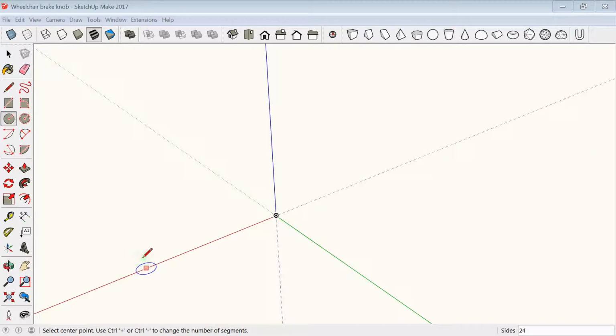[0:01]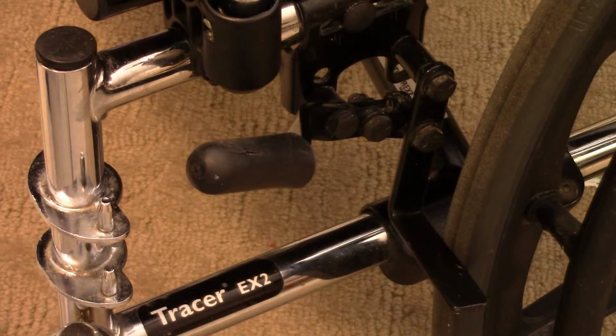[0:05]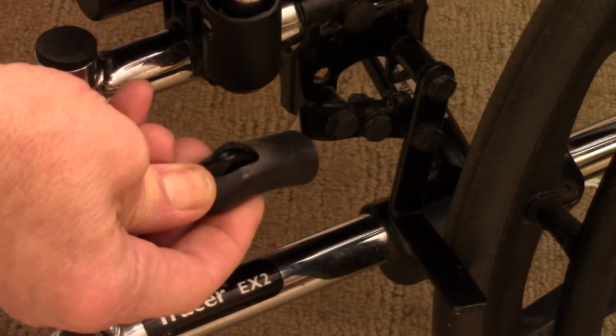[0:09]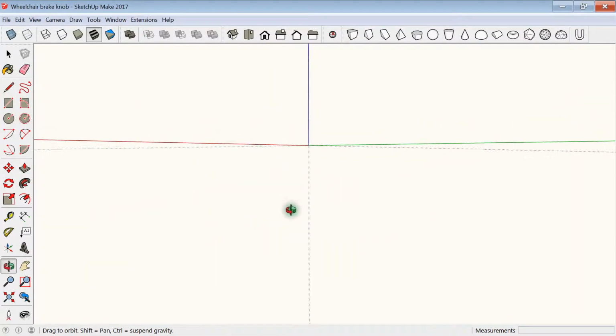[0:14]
In this video I'm going to make a replacement wheelchair brake handle. You can see where the old handle is broken and kind of pushed right through, so I'm going to take that off. I'm going to start by drawing the profile.
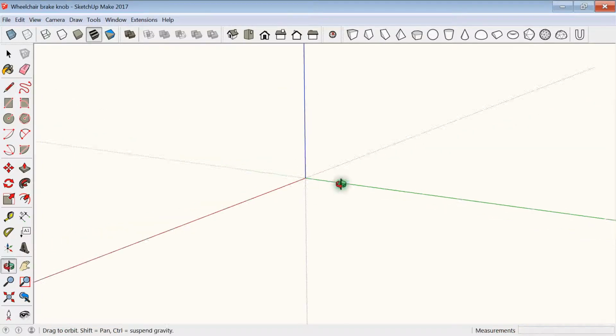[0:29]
Very simply coming up. The original is about 60 millimeters or a little less, so I'm going to make it 60 millimeters. And then it's about 23 millimeters in diameter. I'm going to come out on the green axis by pressing the left arrow key, and I'm going to come out 11.5 millimeters, and then down to the green axis and then back, just to make a rectangle.
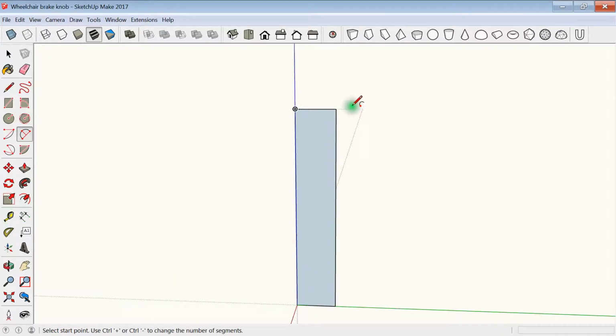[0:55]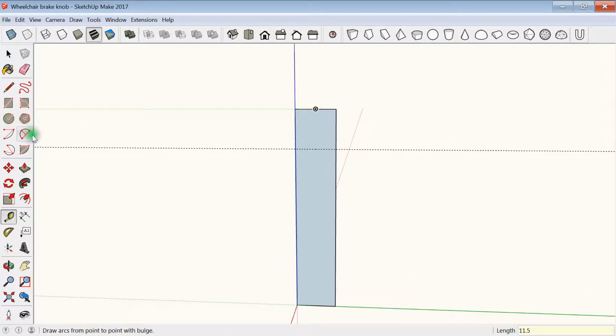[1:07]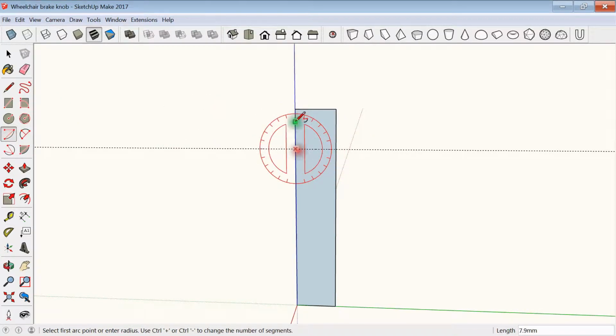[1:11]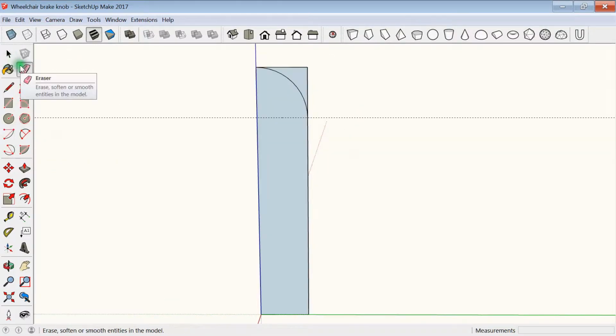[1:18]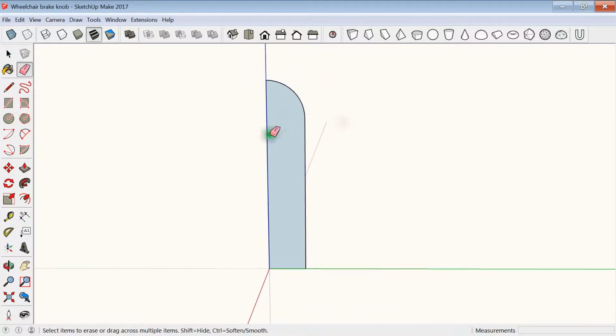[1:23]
Okay, I'm going to round off the top corner to make it a half round dome on top. So to do that I need a guideline, 11.5 millimeters down, and the arc tool, take the corner off, and then erase the outside edge. Next I'm going to select it all, and then lift it up a little bit.
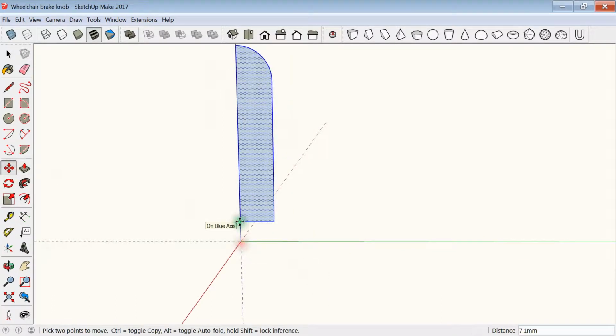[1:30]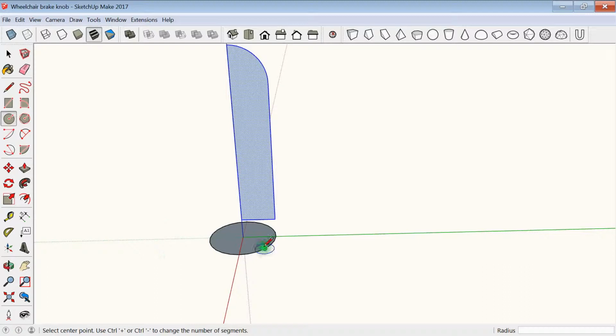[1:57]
Then I'm going to draw my circle underneath. I'm going to use the up arrow to make it snap to the blue axis, and then again, coming out 11.5 millimeters. And that'll be fine.
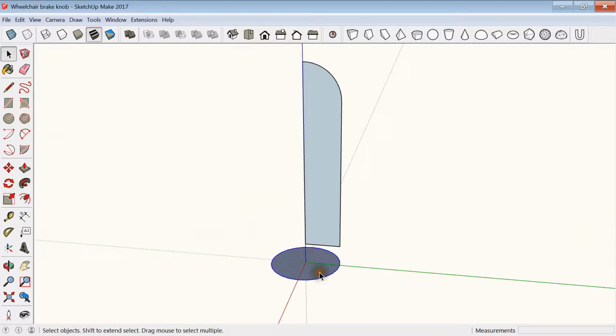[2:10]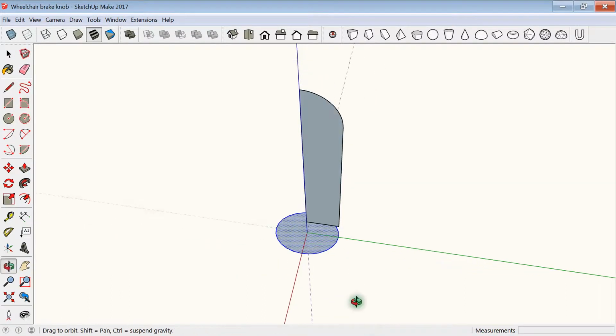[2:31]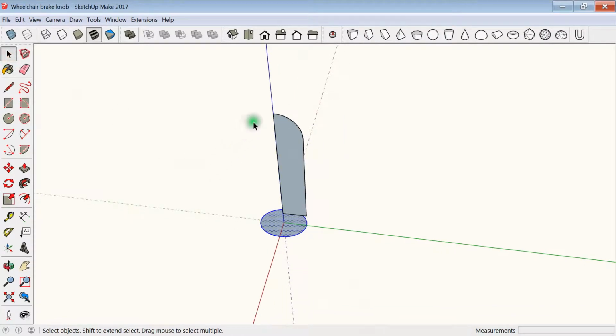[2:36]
Now, I'm going to make it slightly oval. I'm going to triple click on the circle to select it all, and then the scale tool, and then on the red axis I'm going to scale it down to make it a little bit of an oval. So holding the control key, I'm just going to push it in to about 80% or somewhere around there, just to make it a bit of an oval.
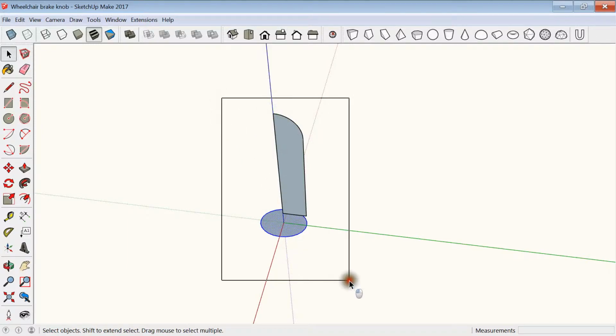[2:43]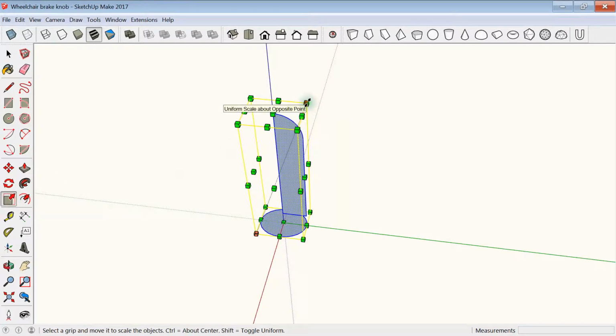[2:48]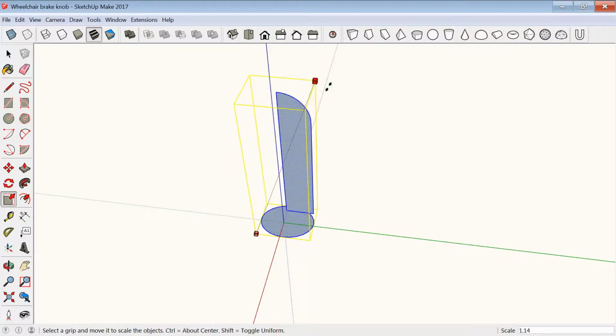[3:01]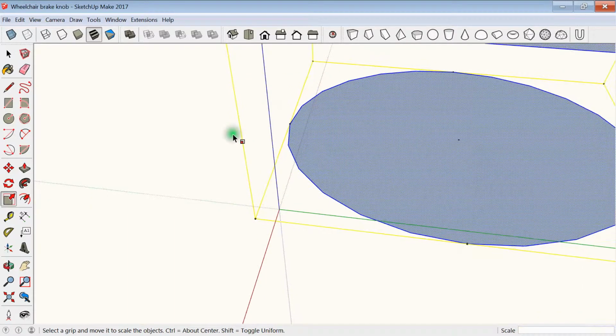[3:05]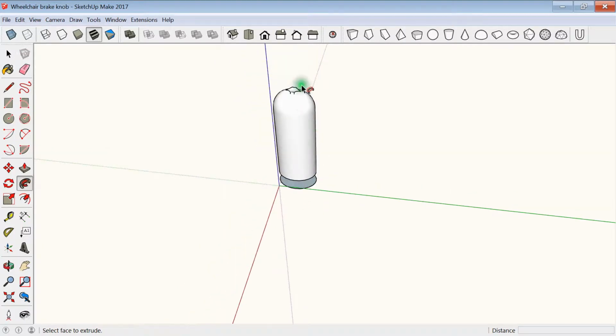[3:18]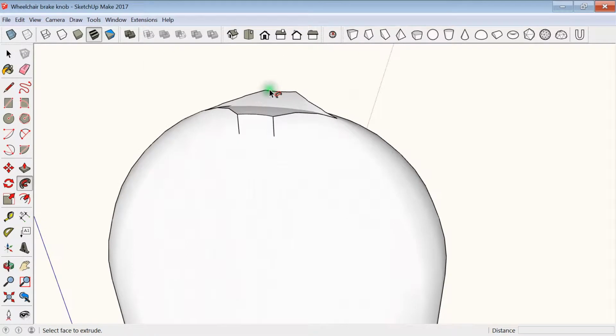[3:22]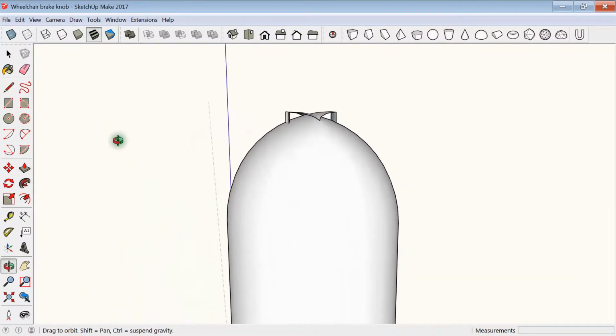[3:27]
Now, sometimes when it's this small, it has a hard time with the geometry of curves at the top. So I'm going to select the whole thing and scale it up 10 times for just a few minutes. Clicking on one of the corner pieces so that it's a uniform scale, I'm going to start drawing up and then put 10 and enter, just to make it huge. Now, clicking the outside of the base of the oval, and then the Follow Me tool, and then click on the face. It still has a little bit of an odd edge, but I think it's going to be okay.
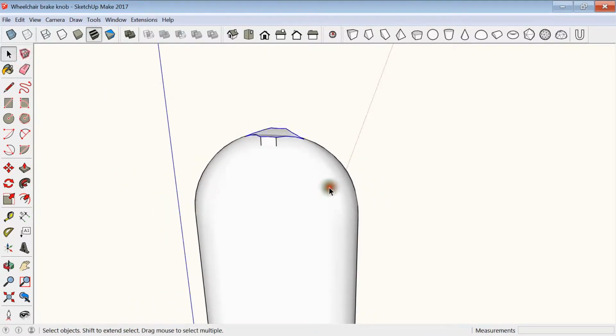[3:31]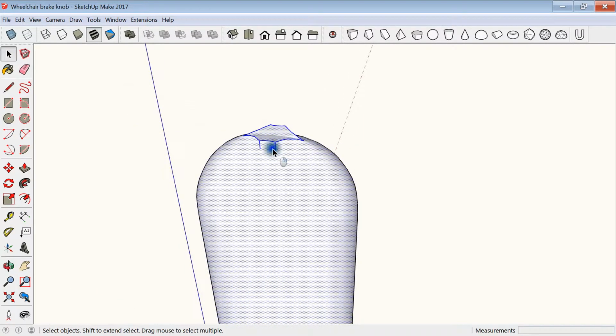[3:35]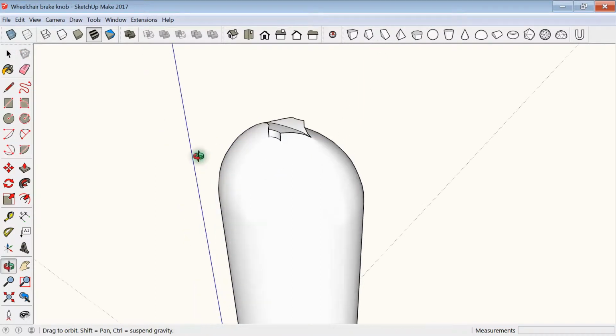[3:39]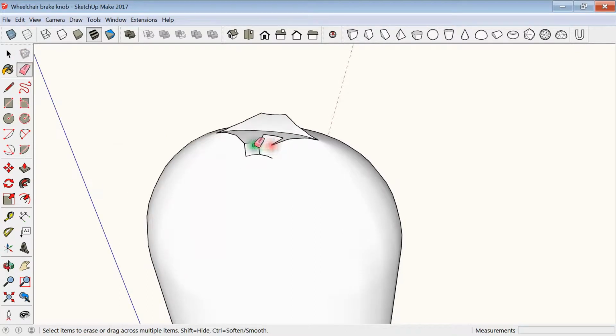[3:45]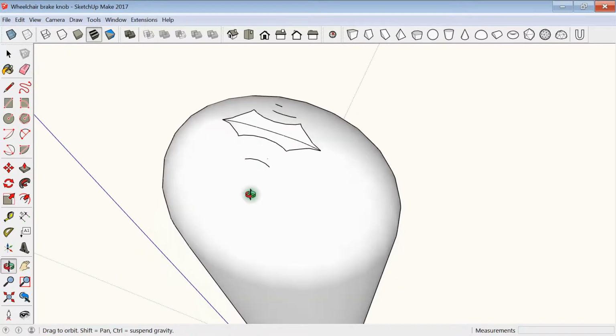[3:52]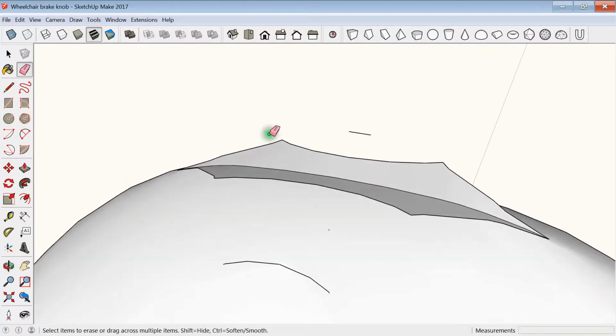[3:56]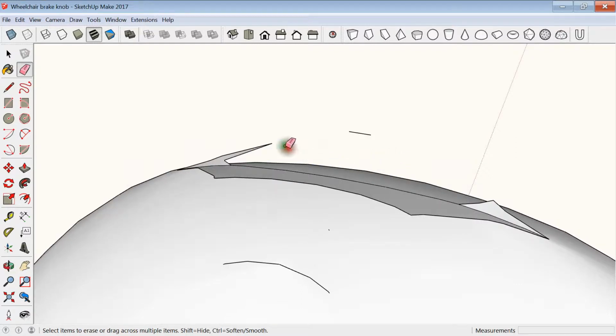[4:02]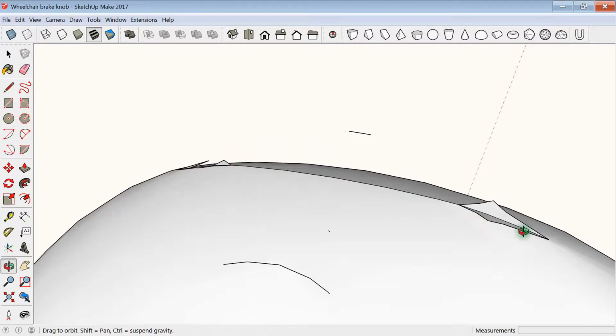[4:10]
So I'm going to select everything, then right click and intersect faces. That should allow those areas to be cleaned up. And I'm just erasing the extra pieces. There's probably a much better way to do this, but I don't do these enough to worry about it. So I'll just clean it up by hand real quick, just using the eraser tool and erasing the extra piece of geometry that I don't want.
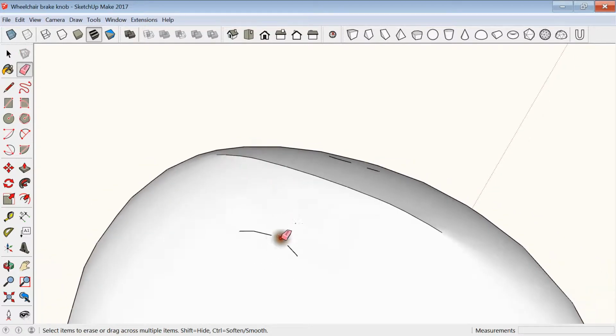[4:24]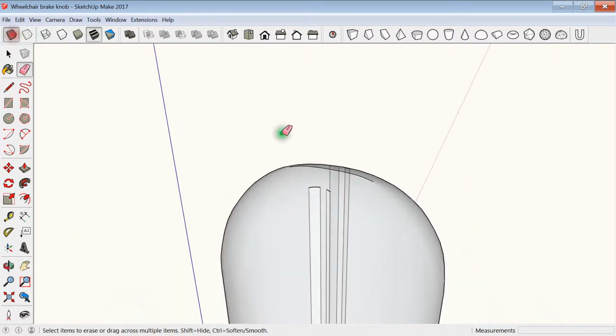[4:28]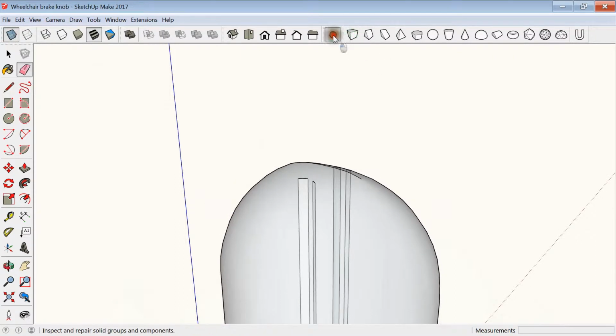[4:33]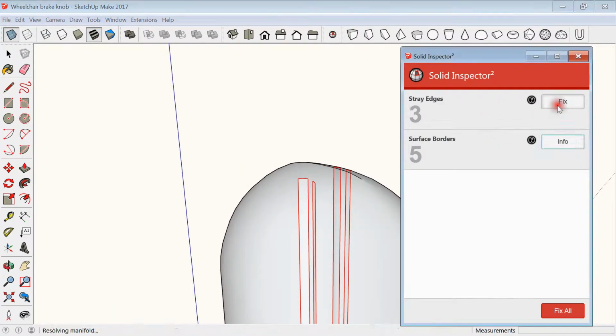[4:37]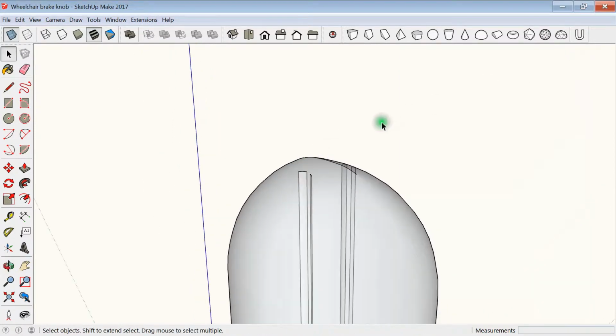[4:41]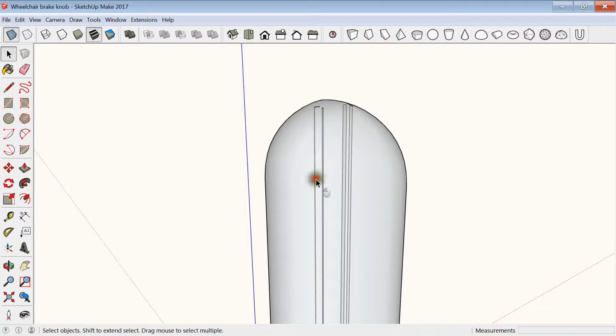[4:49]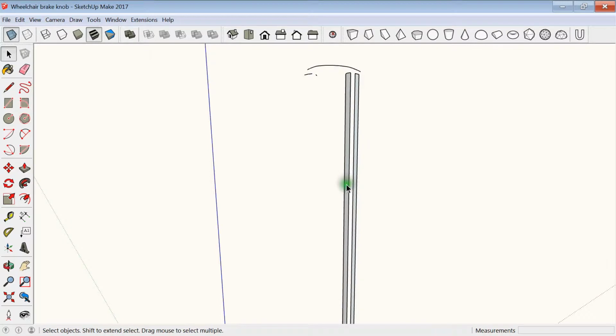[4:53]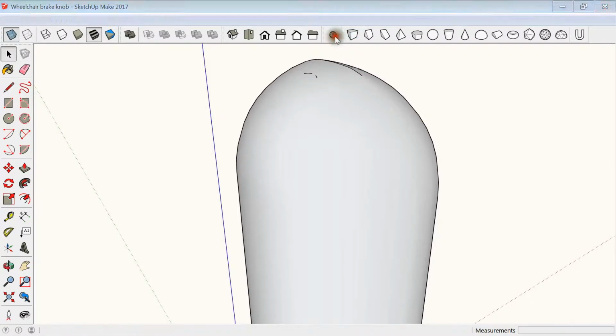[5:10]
Okay, let's look at it in X-ray mode. It's got a few extra pieces in there still. So let's see if we can select those from outside. Yes. So I'm just selecting them and then deleting. Whoops. Just being careful not to select the whole thing.
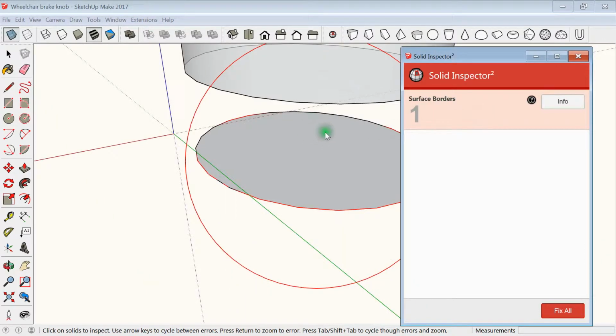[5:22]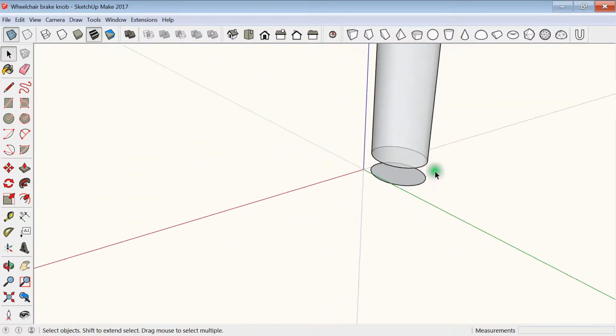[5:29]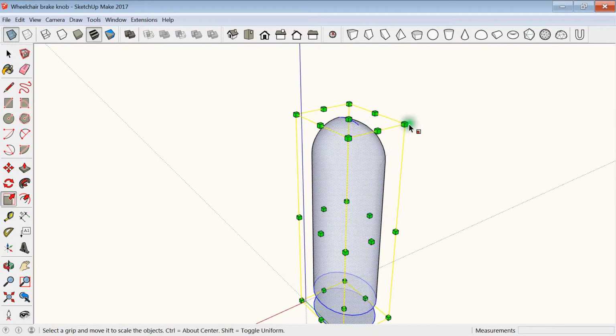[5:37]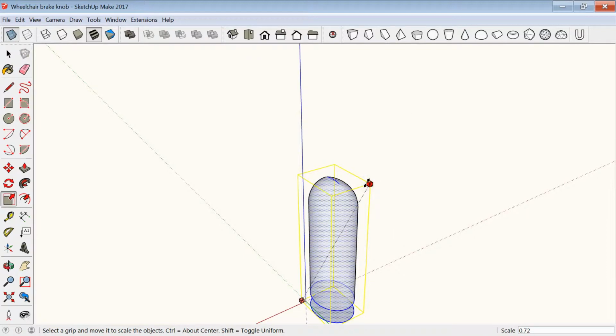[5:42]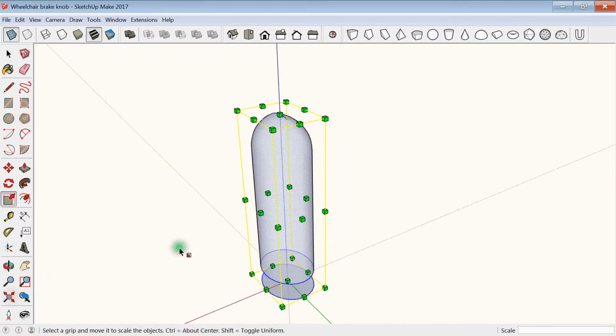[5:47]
Okay, and then the surface border, let's find out where that's at. I can find that out by clicking on it, and then the up arrow, and then enter. And of course it's the bottom, the base piece. Okay, that's fine for right now, because now I'm going to shrink it back down by going the opposite direction, start pushing in, and 0.1 and enter. And then zoom extents.
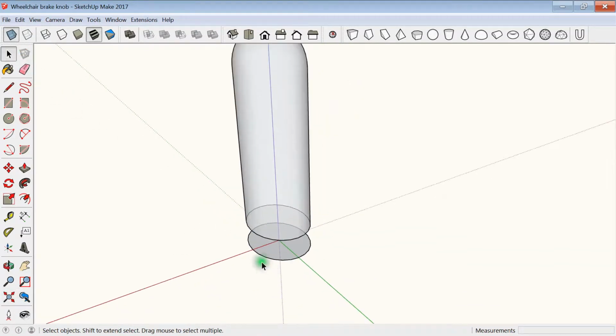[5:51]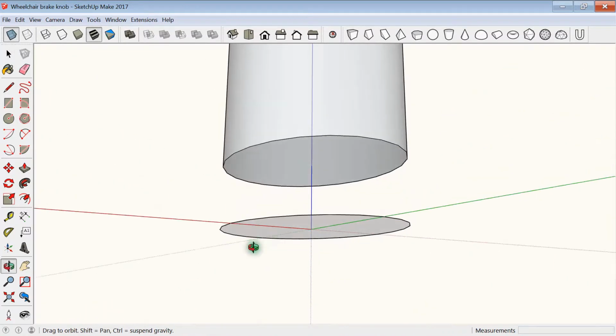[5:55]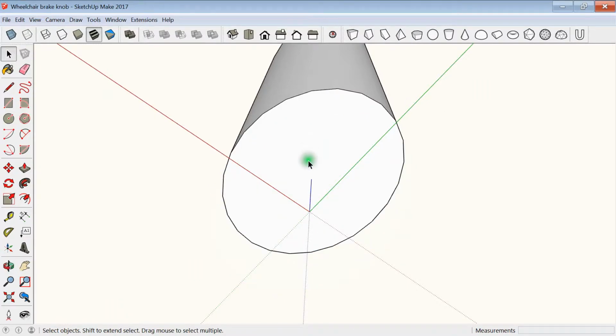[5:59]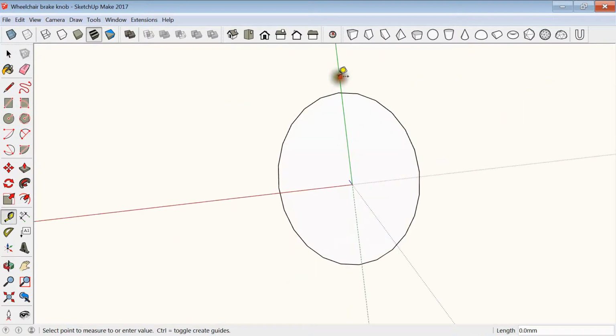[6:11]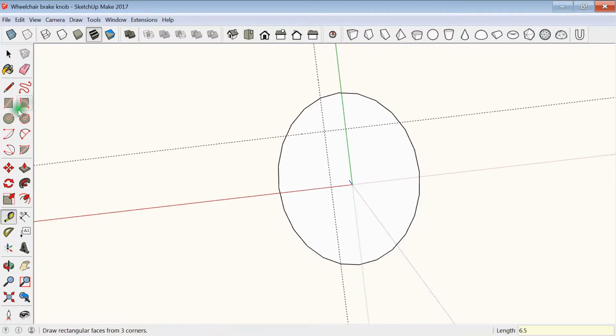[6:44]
Okay, now I need the rectangle hole, so we can get rid of this bottom piece now. I need to make the rectangle, it's 4.9 millimeters by 13 millimeters, 40 millimeters deep into it. Tape measure from the green line over. I'm going to go 2.4. Okay, let's try that correctly. Go over 2.4 and enter. And from the red axis, going to come up or down, it doesn't matter, half of the 13, so 6.5 millimeters, and enter.
Now with the rectangle tool, start at the intersection we just made and start pulling diagonally. Hit the up arrow key to lock to the blue plane. Start pulling across, and then I'll type in 4.8, comma, 13. And that'll give the rectangle.
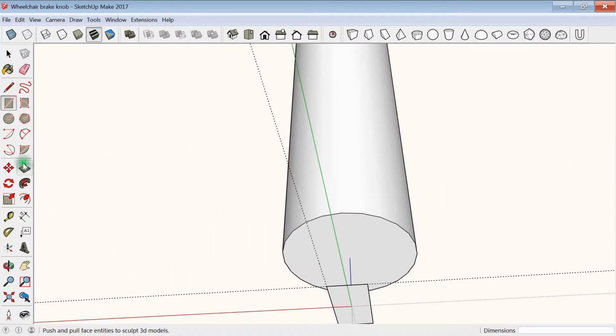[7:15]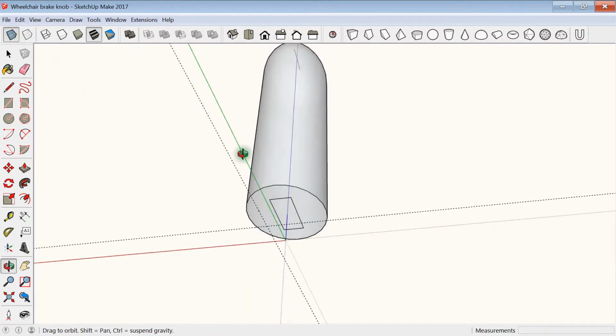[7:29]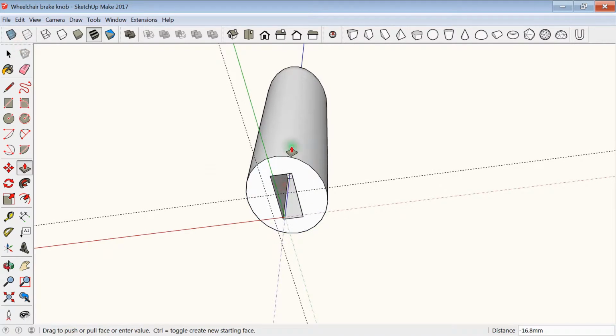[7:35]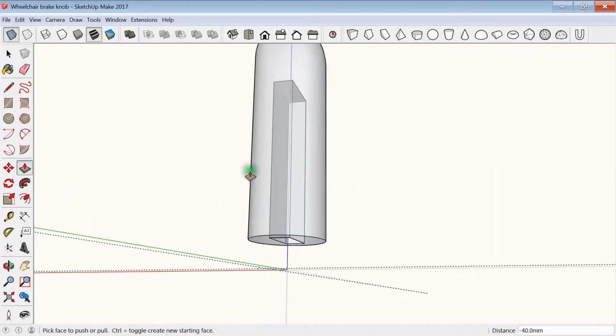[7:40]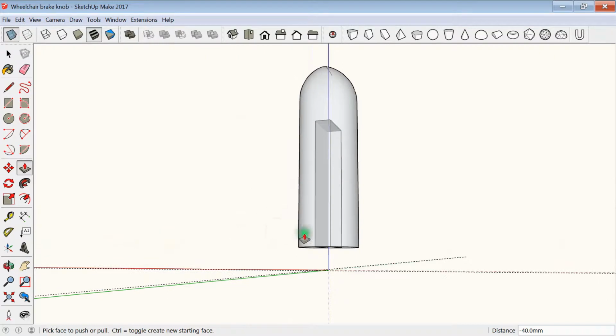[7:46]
Now with the push-pull tool, you can just pull it up until it hits the face. I'm going to do the same with the bottom of it. Now it should just have a rectangle at the bottom of it. Now the push-pull tool again, and then push it up 40 millimeters, enter. By printing this with a flex material with a low infill, that should give it some give and flex and should fit it nice and snug.
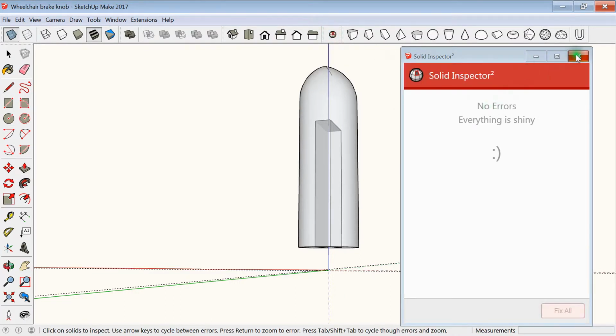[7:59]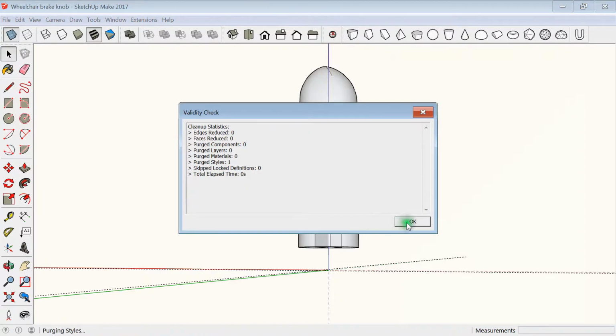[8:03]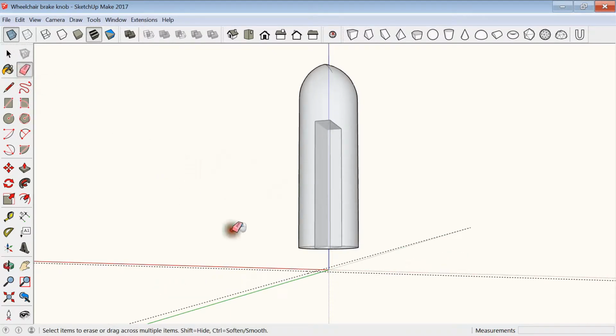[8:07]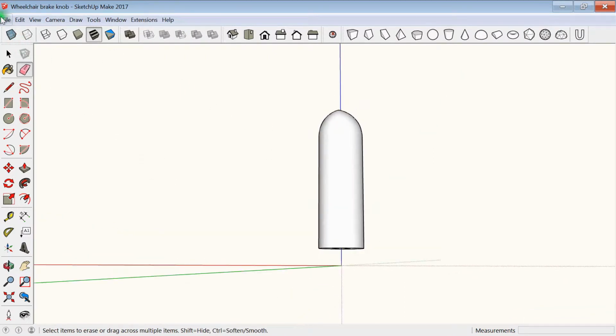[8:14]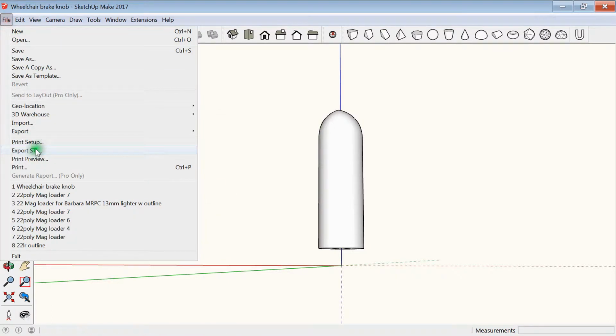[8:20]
So last I'm going to do the solid inspector and the cleanup tool, and everything looks good. Get rid of the extra lines, and finally save and export. So save, then export as an STL.
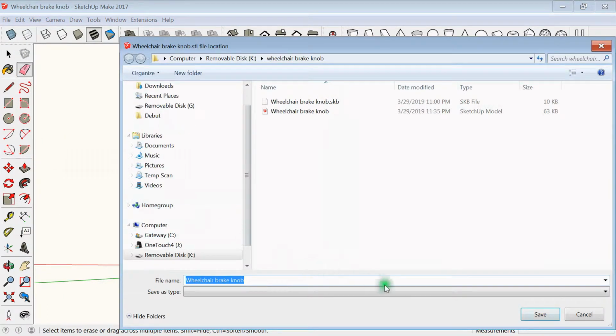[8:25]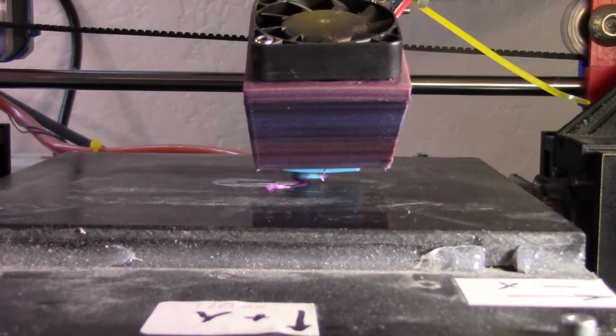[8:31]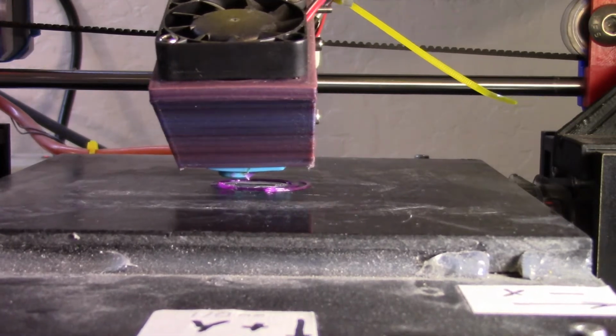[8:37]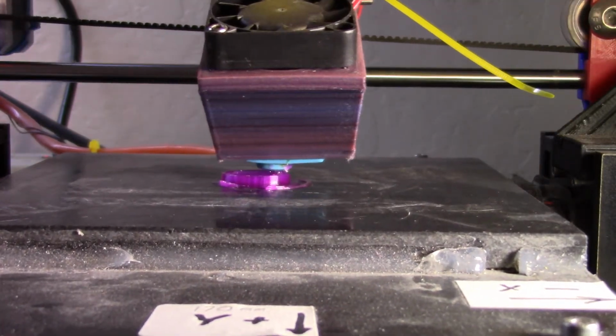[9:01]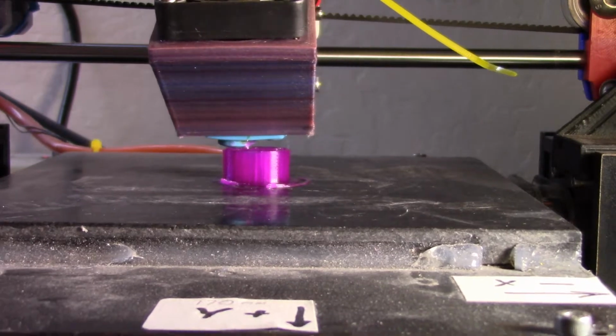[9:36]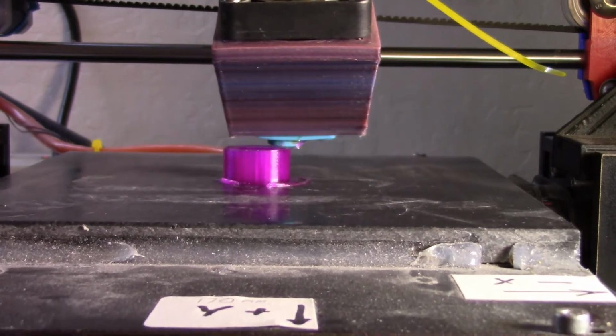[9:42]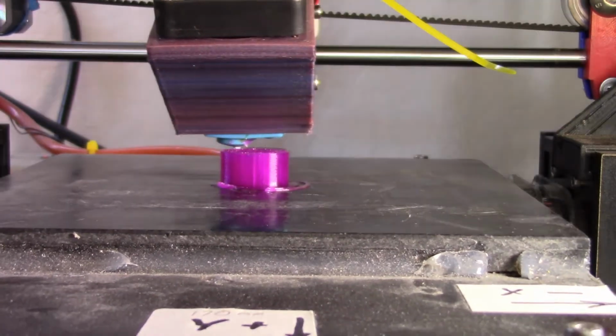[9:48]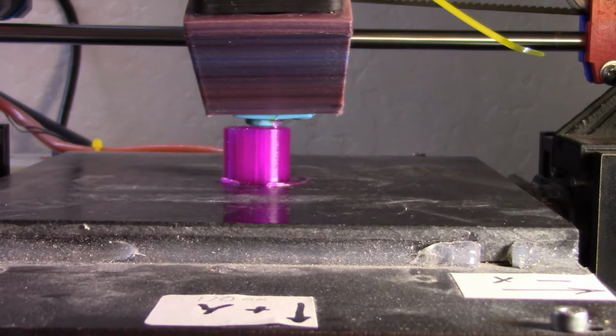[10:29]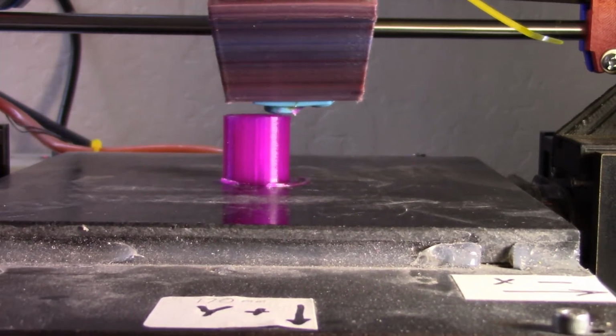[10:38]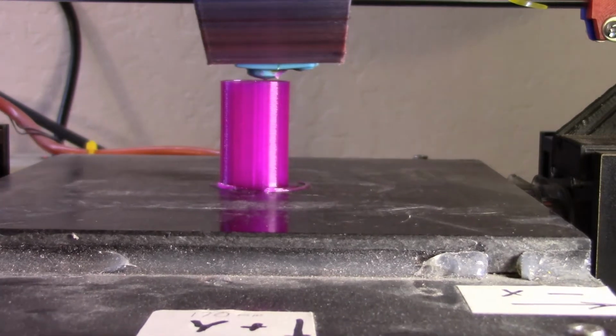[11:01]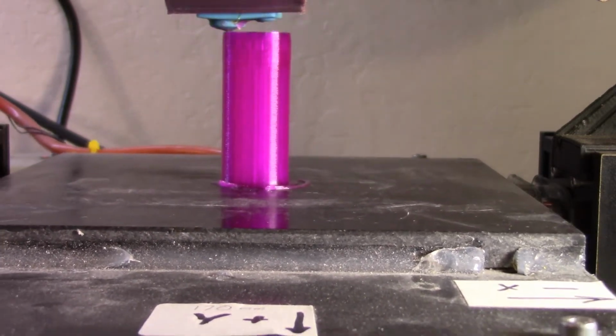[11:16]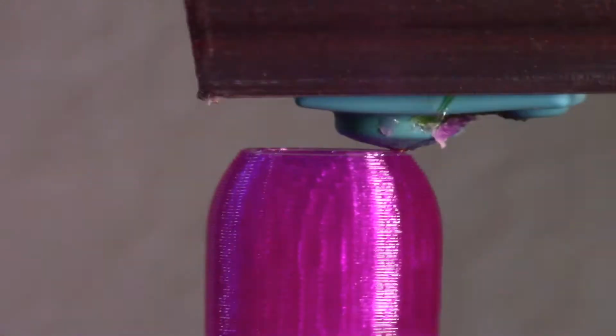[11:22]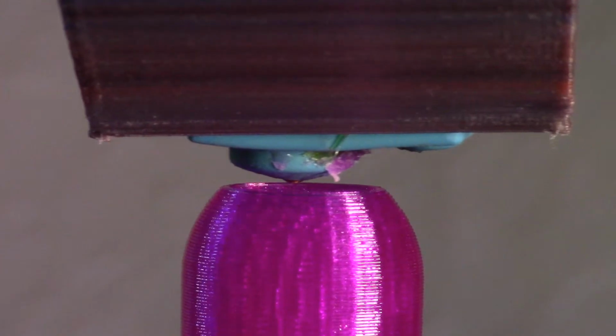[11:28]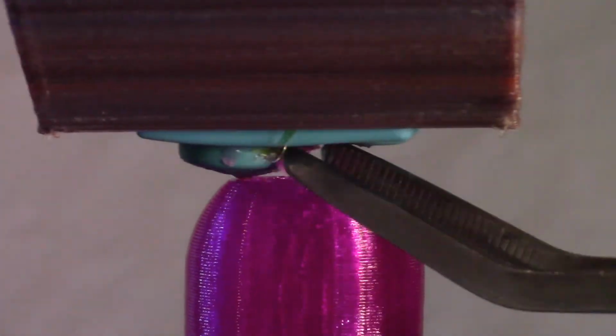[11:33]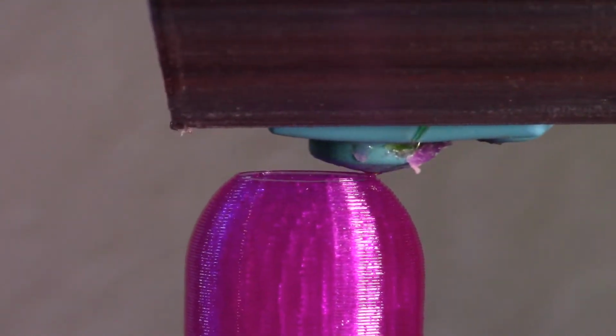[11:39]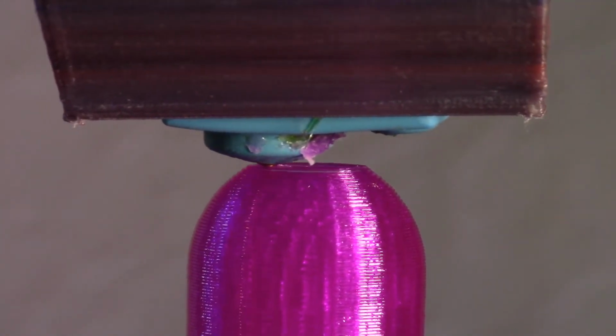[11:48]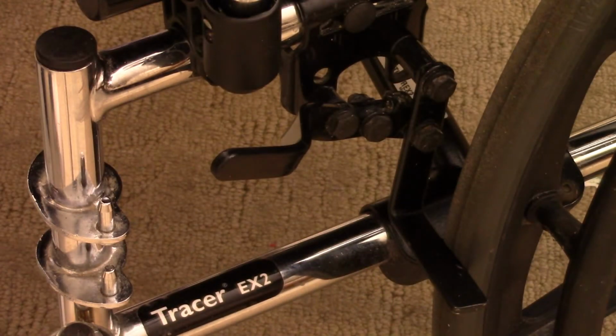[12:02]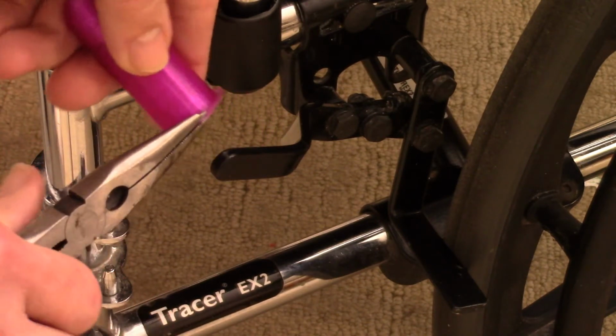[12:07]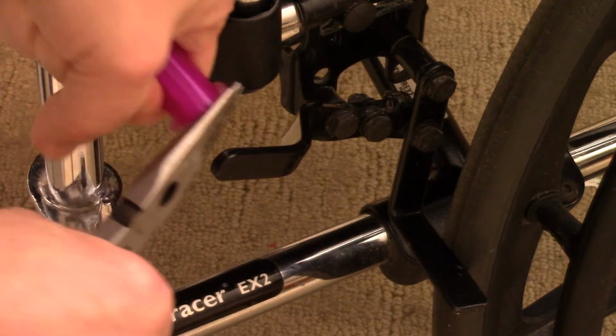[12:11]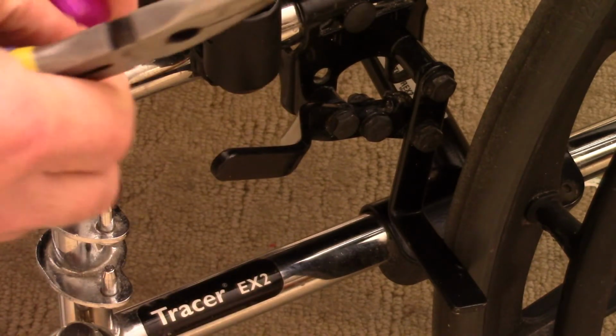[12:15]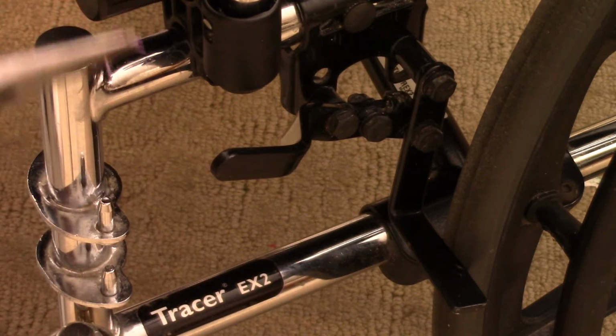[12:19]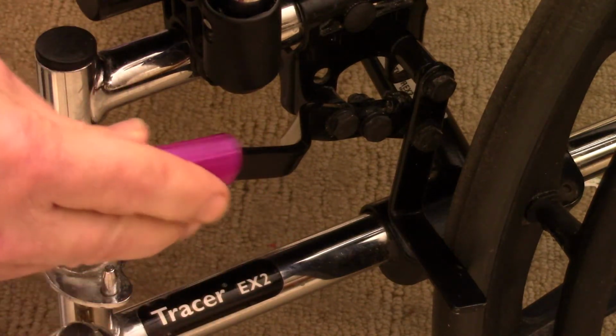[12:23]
Take that off. The new one has a flange on it from printing. Try to pull that off. There it goes. Sometimes you have to cut it off with a razor blade because it's so strong. Okay, and that's with the flange off. It's a nice snug fit.
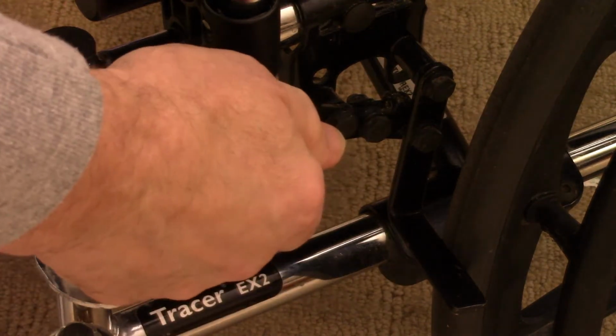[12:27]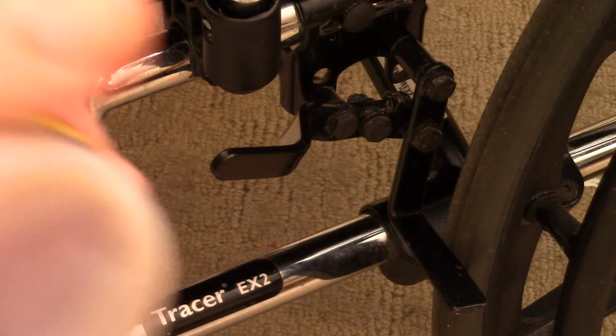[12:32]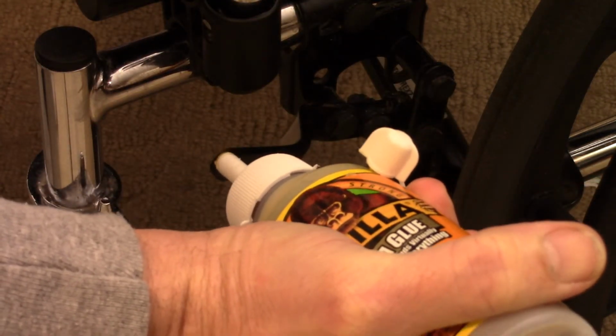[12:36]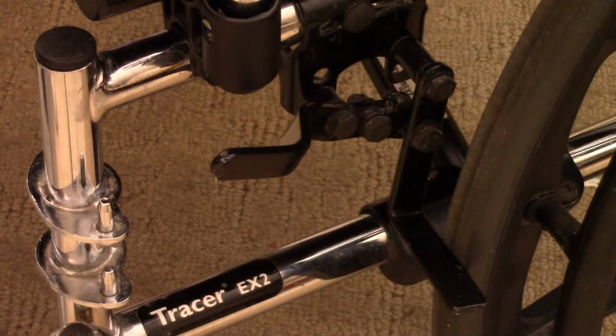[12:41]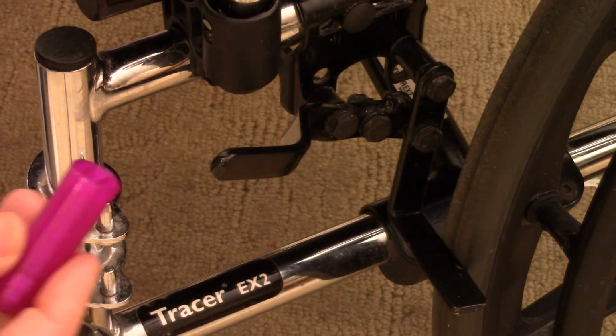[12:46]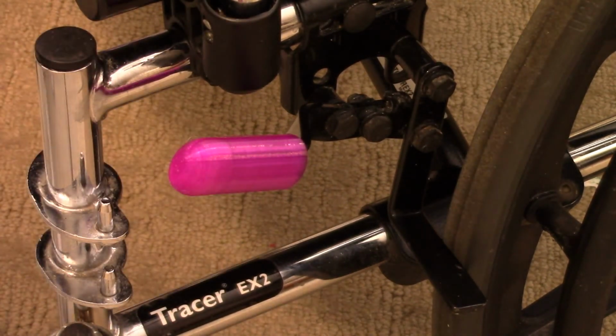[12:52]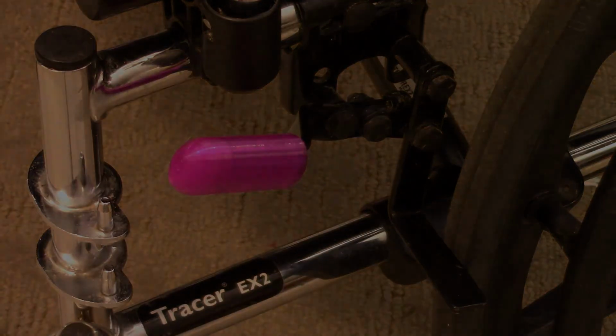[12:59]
I'm going to try just a little bit of Gorilla Glue on it. Put just a little dab of Gorilla Glue on it, and push that right on. And the same for the other side.